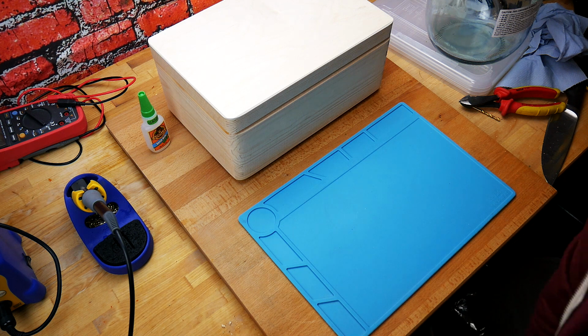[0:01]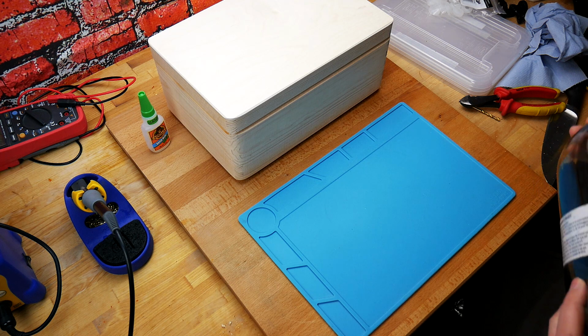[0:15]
Welcome back, guys. So today we're going to be doing a bit of a DIY project. We're going to be creating a stir plate. You can buy these online for about 70, 80 pounds, but very easy to make yourself.
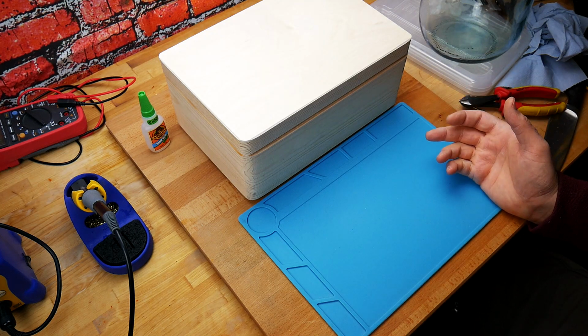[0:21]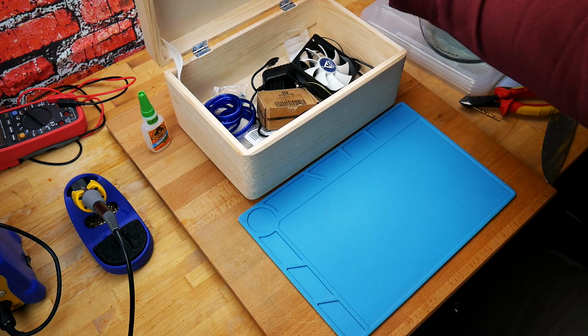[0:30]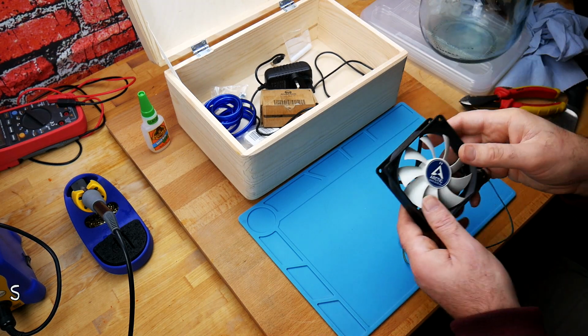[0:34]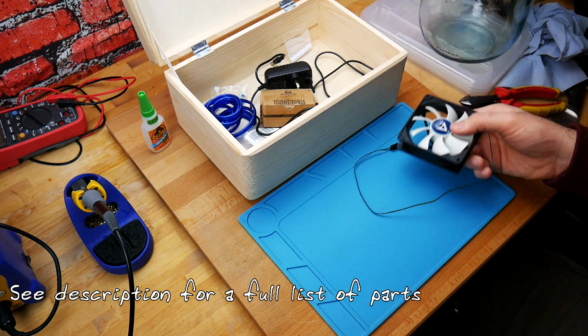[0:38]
So what do you need to make a stir plate? So I've got a box. You don't have to go fancy with a box like this, but I got this quite cheap on Amazon. Here are a couple things. First thing, a fan. I'm sure that you have one lying around. If not, they're very cheap to get online, a couple pounds.
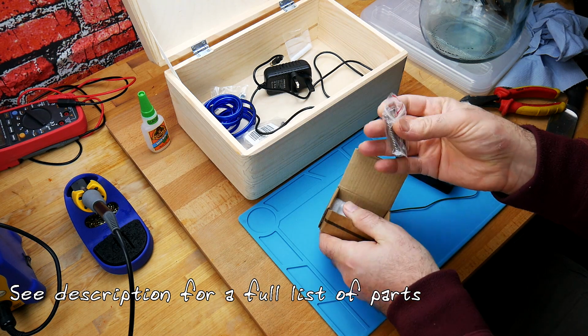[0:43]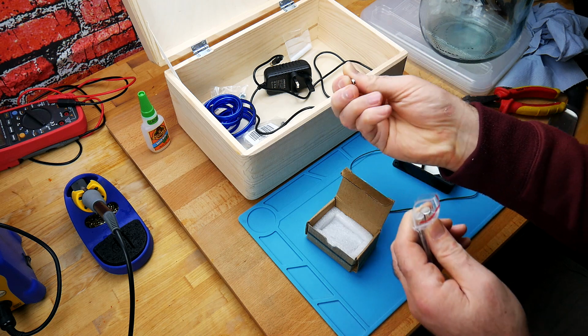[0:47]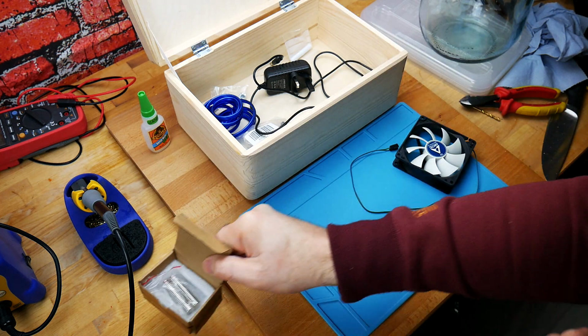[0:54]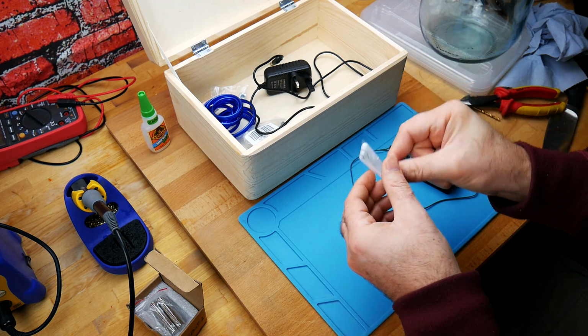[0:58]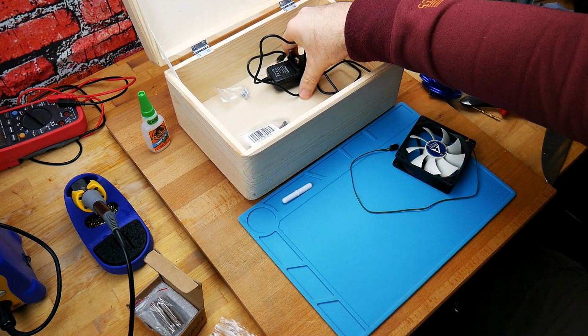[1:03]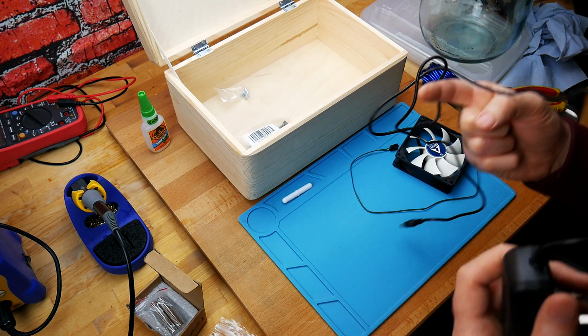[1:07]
You're going to need some magnets. These are just little button magnets, rare earth magnets, neodymium magnets. They're very strong. So we need a couple of those. You're going to need a stir bar. Again, online you can get these quite cheap. You're going to need some wire to do some wiring inside here. We need a 12 volt wall wart, so something like this. This provides 12 volts at 1 amp. Should be more than enough to drive this fan.
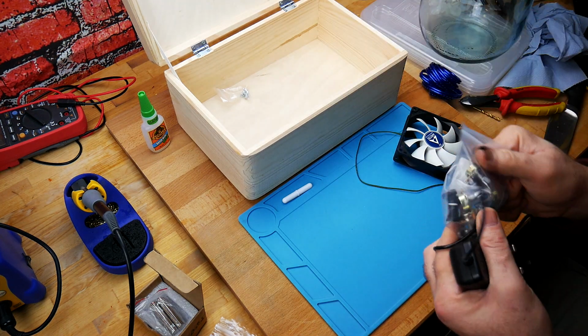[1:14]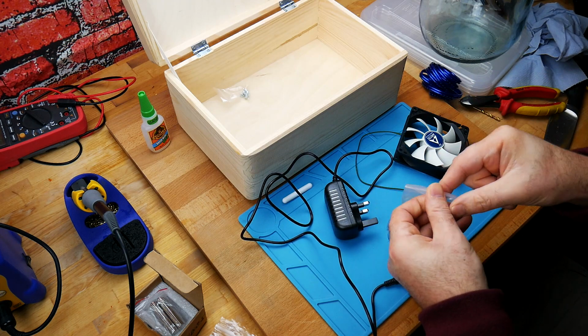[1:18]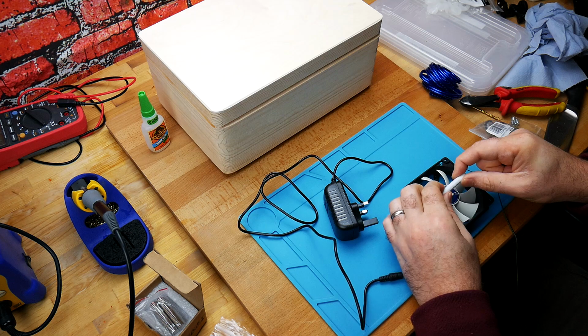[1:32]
And you can get yourself some of these. So this here is just to be able to change the speed of the fan. So you connect the wires going in, and this here you turn to turn it up and down. Pretty straightforward. The stir bar is essentially going to be sitting just above that inside the bottle, and the magnets are going to sit here and spin it.
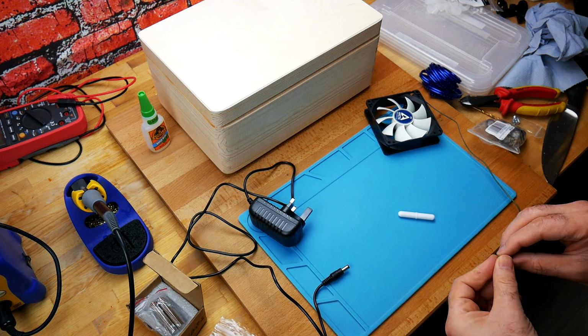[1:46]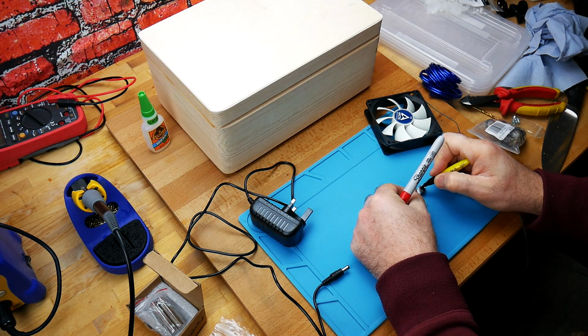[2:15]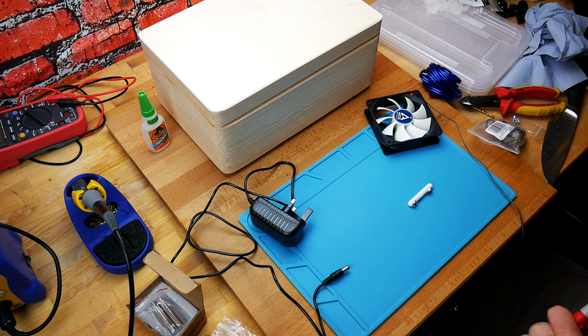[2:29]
So this is already magnetized, and the first thing you need to do before you do anything else here is make sure you know which side is north and south on these magnets. So if we do this, we can see that it sticks. It sticks that direction. If I move this across, you'll see that it wants to flip over. So make sure that we've got them the right way up. There we go. And just mark them. Color it in with a bit of black and the other one with red, so I know when I glue it on that I'm not putting them both the same way up. So there we go. You can see, marked them there.
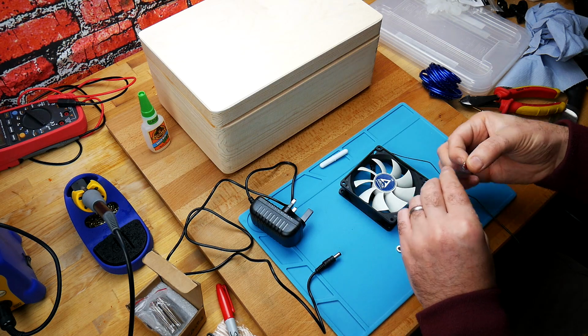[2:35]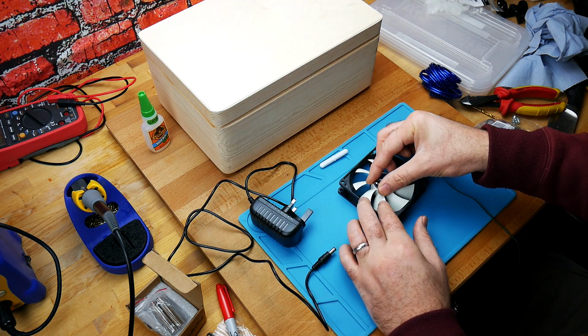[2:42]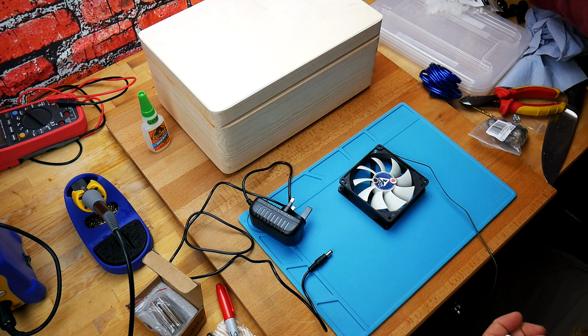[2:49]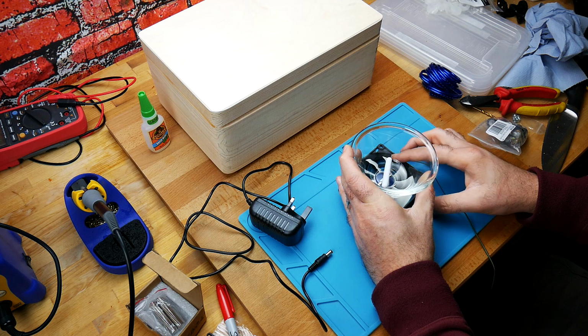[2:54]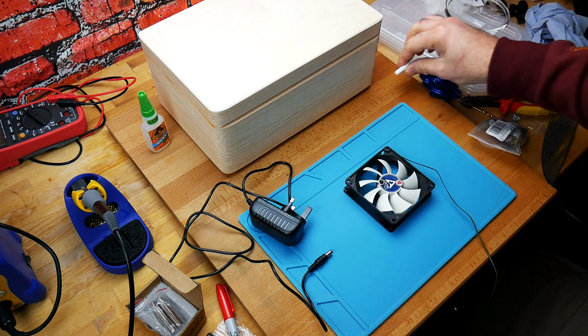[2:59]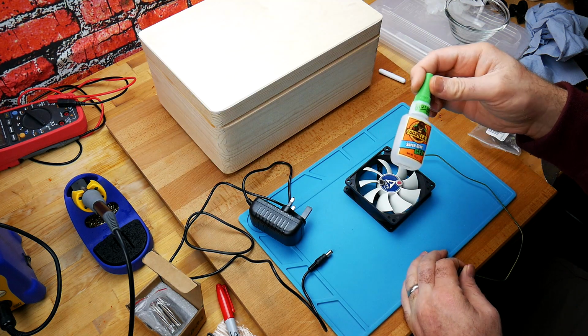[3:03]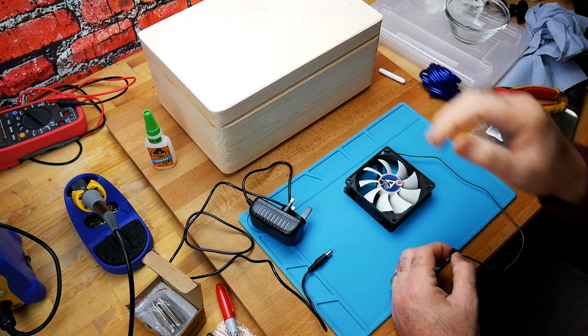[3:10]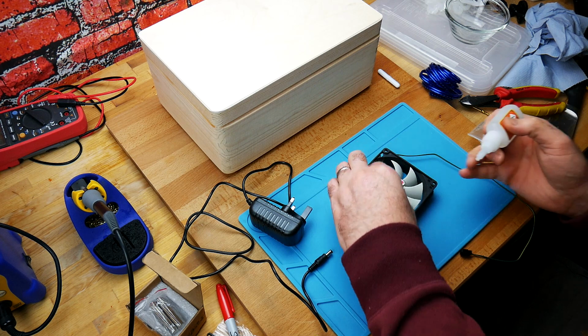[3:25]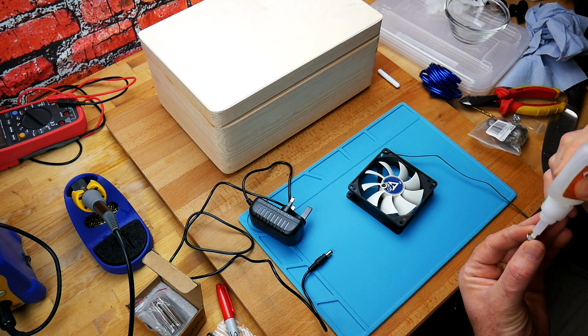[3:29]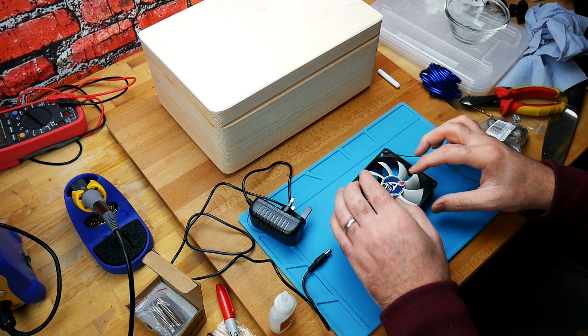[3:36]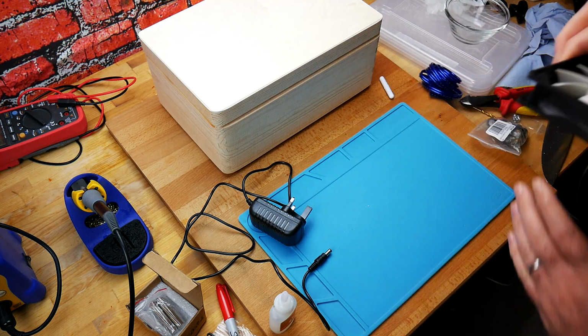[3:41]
My intention, I think, is to glue this onto there and glue that one onto there. So that's the intention, and basically that should, if we have a look over there, you can see that kind of works. So let's see, we're gonna glue that down. I'm gonna use some Gorilla Glue or super glue to glue those on there. And then we start doing the electrics and get the box set up. I'm going to try and get this evenly spaced because you don't want this wobbling when that fan is spinning. Okay, so we let that dry and let's start preparing the box.
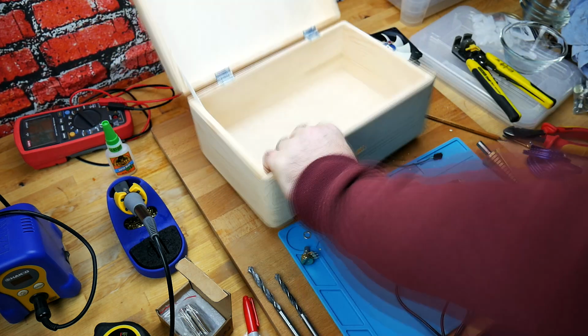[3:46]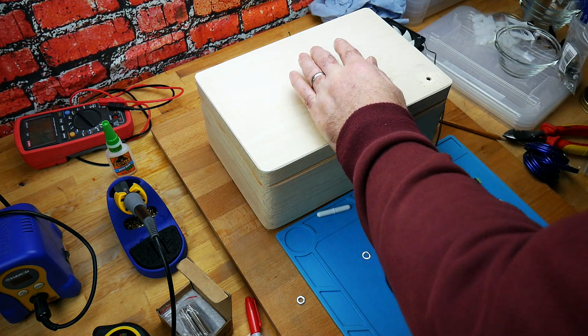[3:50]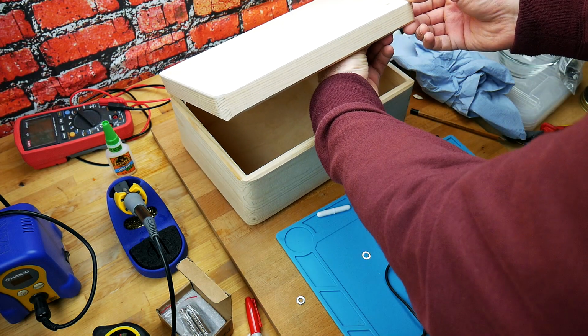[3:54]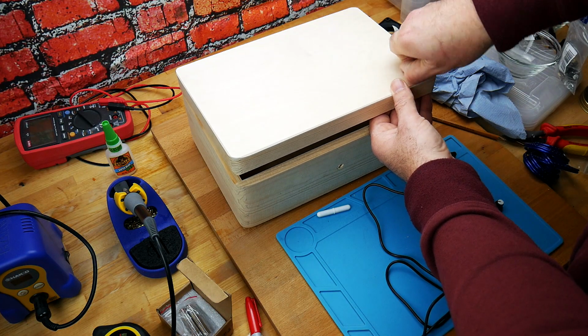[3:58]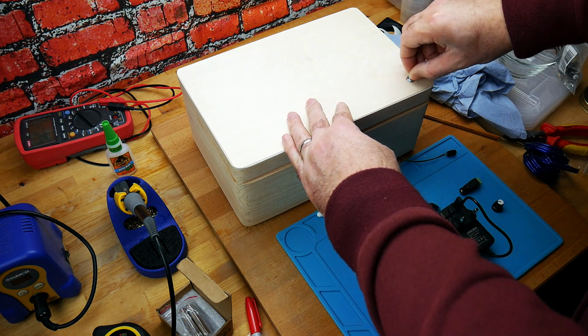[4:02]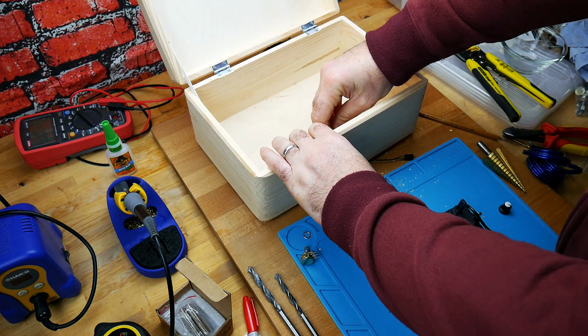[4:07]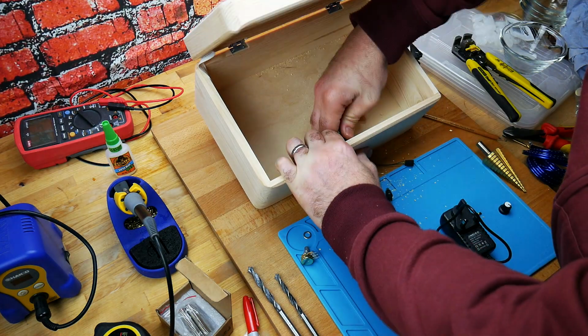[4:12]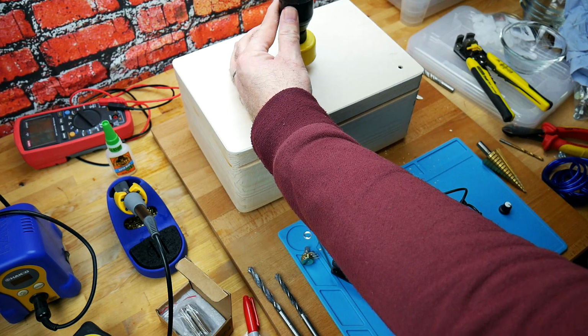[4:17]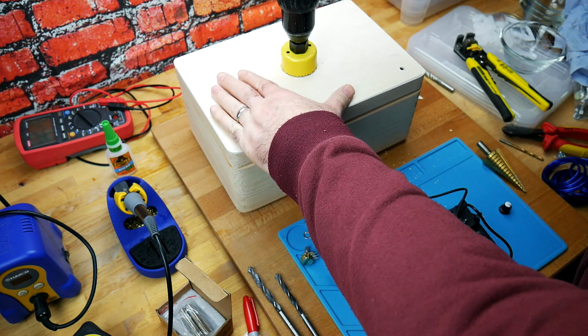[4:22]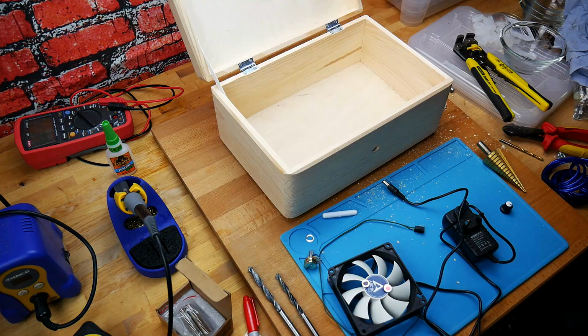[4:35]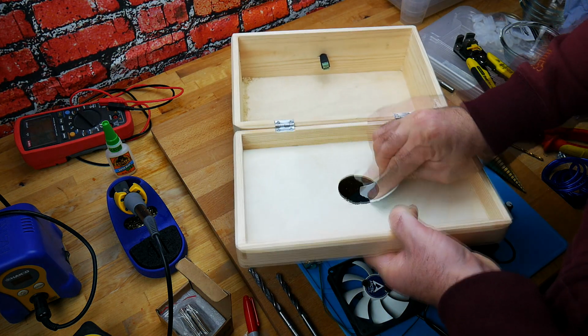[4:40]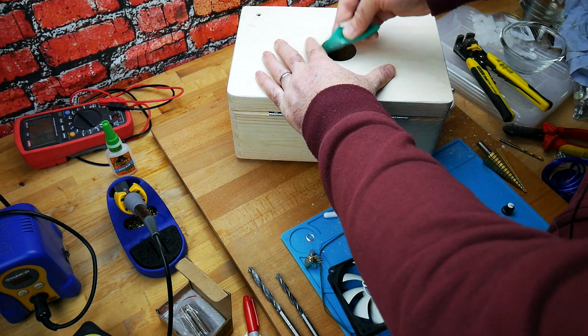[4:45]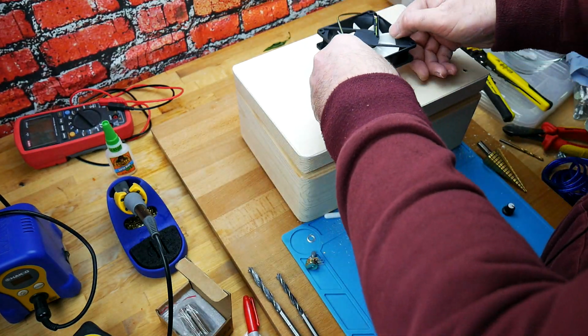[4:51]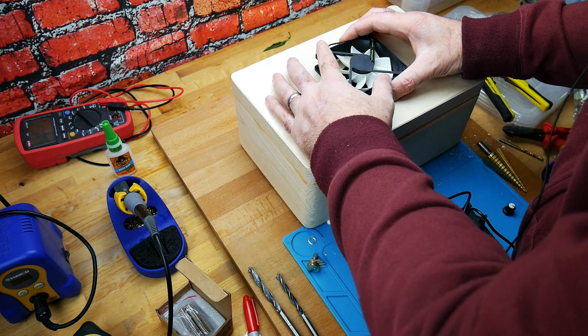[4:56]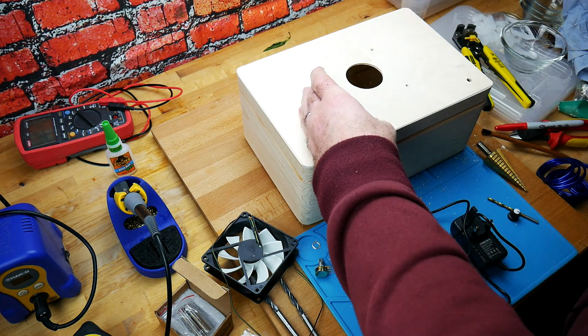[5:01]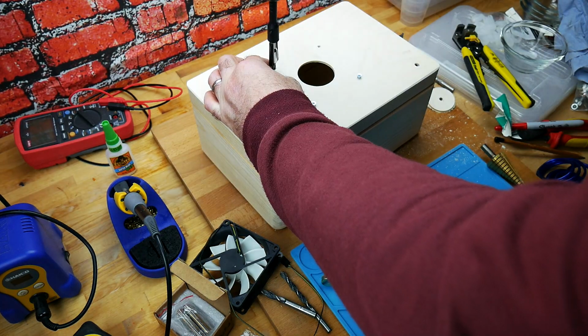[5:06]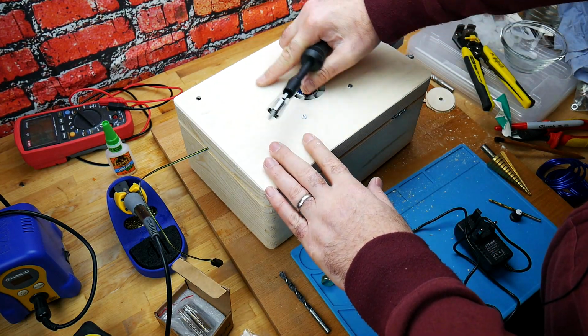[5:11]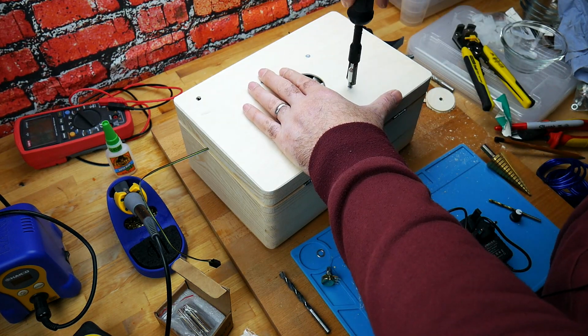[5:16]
Pretty much what it'll look like. We'll have that on top. Okay, little tip here, when you are using these type of things on thin wood like this, run it backwards. A much cleaner hole. Sandpaper, just smooth out those edges. The next thing here is need to center this and put some holes in for the screws. What I do want to try and do is get that as flush as you can, so that anything that's sitting on top isn't going to be sitting on top of the screws.
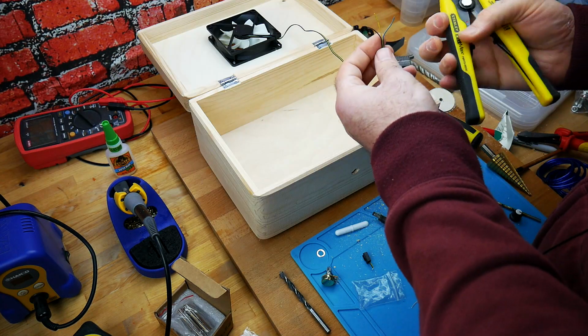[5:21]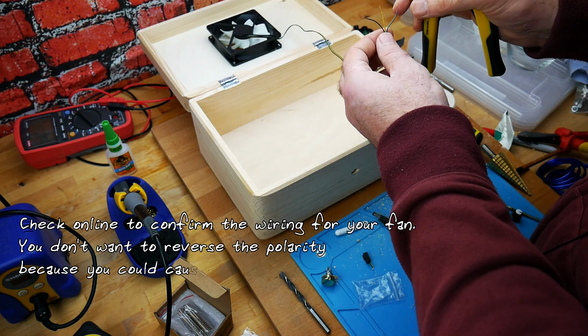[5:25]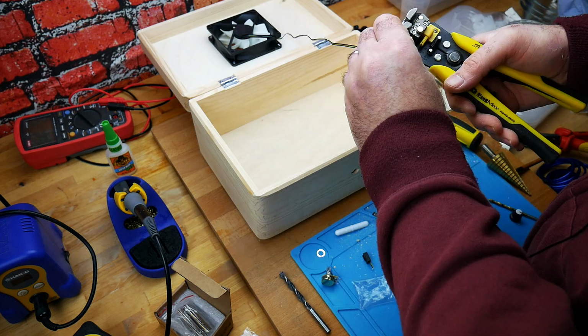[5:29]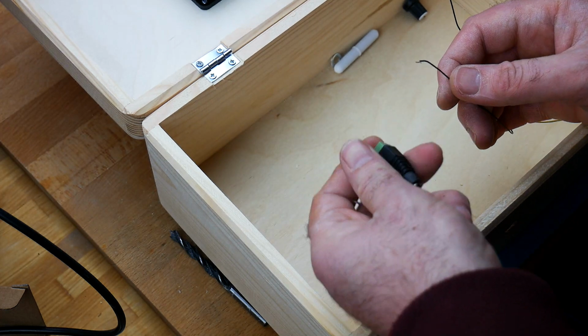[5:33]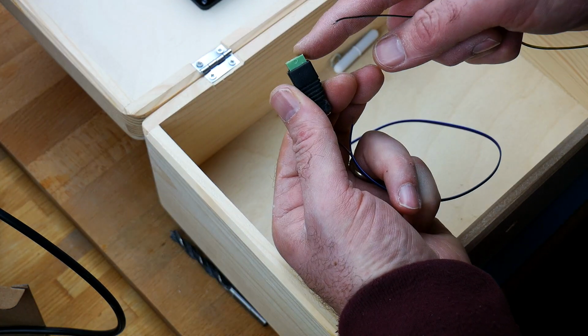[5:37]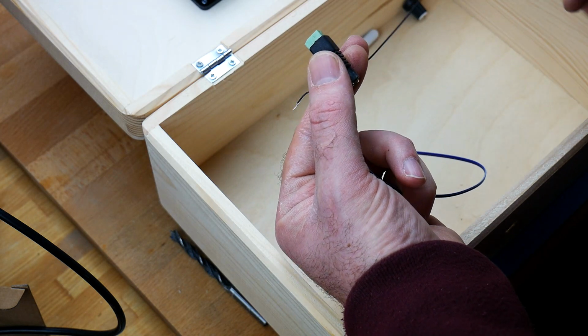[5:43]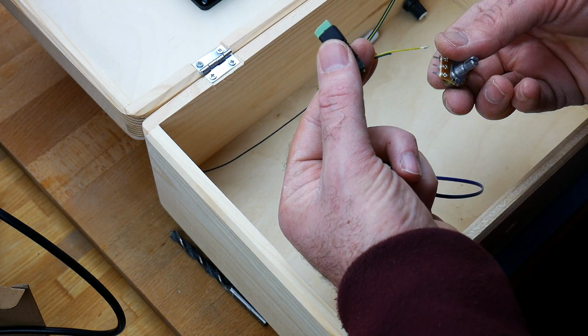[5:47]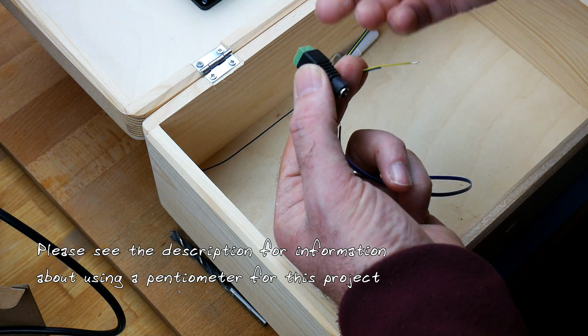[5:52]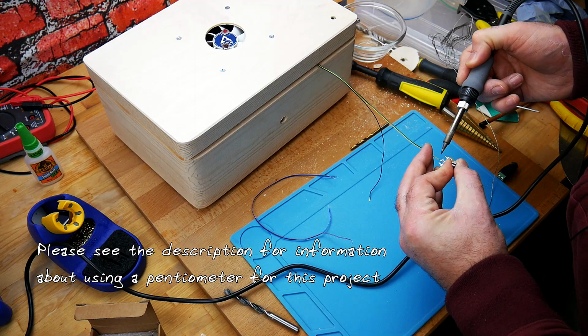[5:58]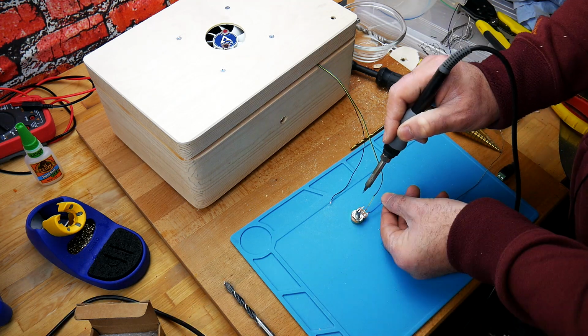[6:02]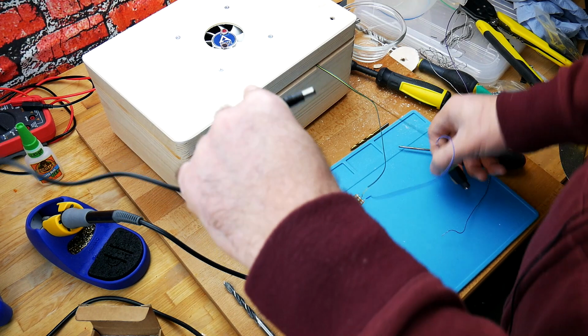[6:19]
I suppose I could have countersunk this. So with this, I believe the green and the yellow and the black are what we need. So we don't need the green. So basically the negative from the power source, which is going to come in here, will go directly through this into the fan. And the positive, one end is going to go into the potentiometer, and the positive from the power in is going to go to the other pin on the potentiometer. And that'll allow us to control the current. So we can test this now to make sure it works before we put it all back together.
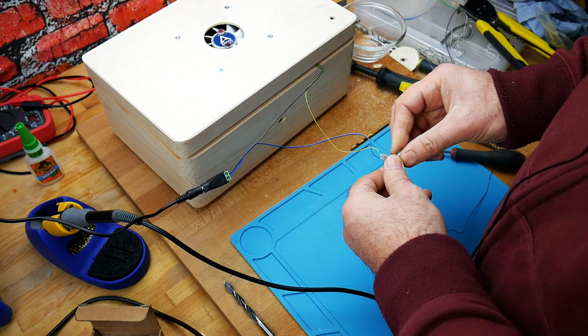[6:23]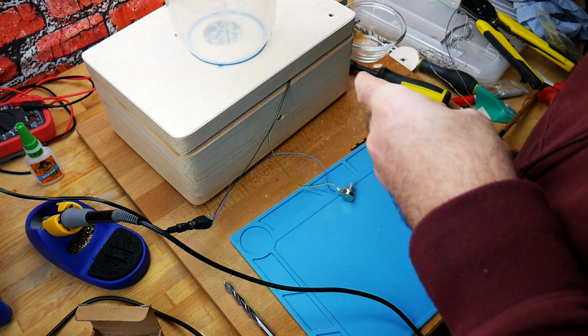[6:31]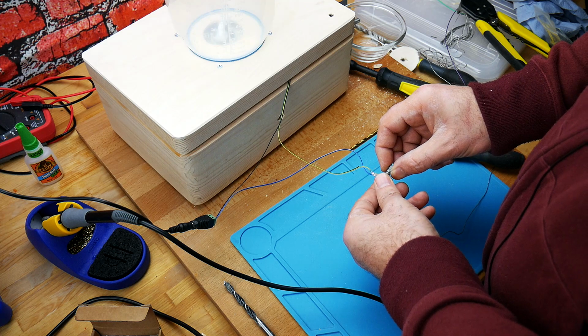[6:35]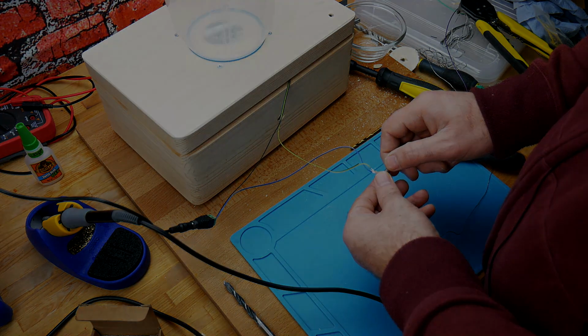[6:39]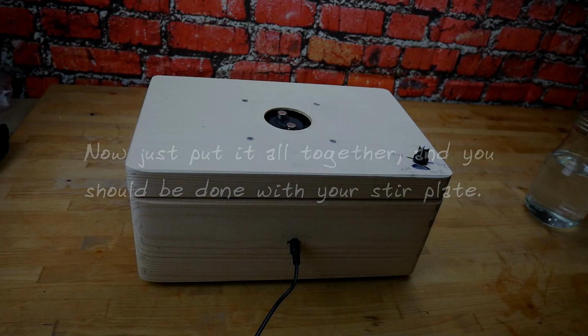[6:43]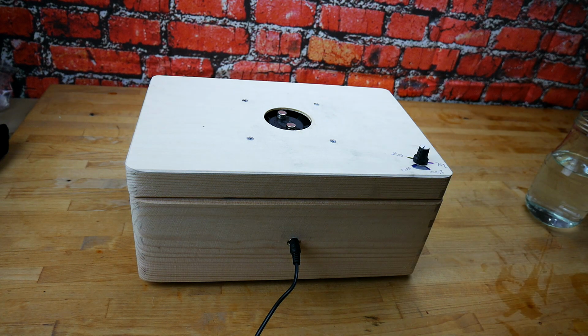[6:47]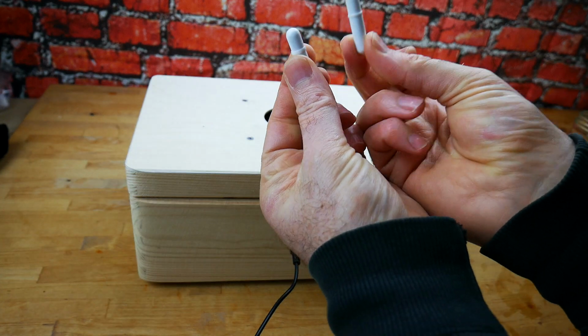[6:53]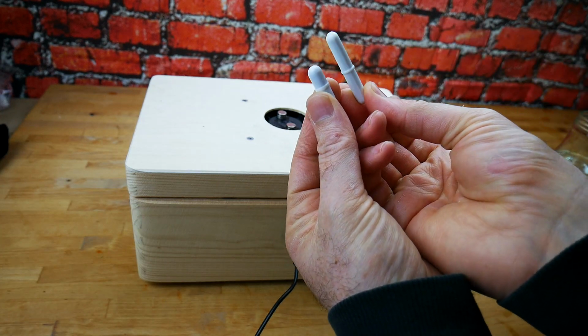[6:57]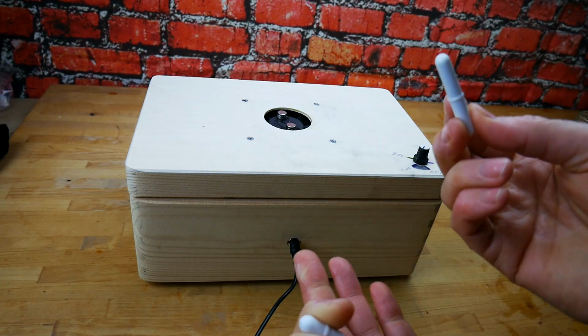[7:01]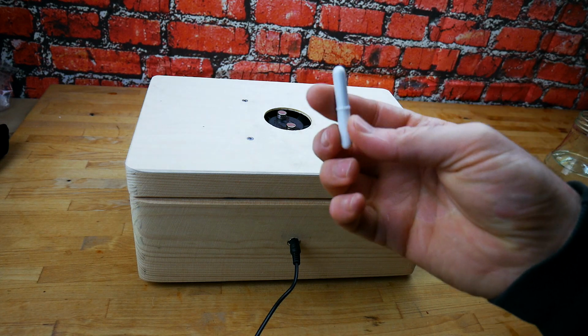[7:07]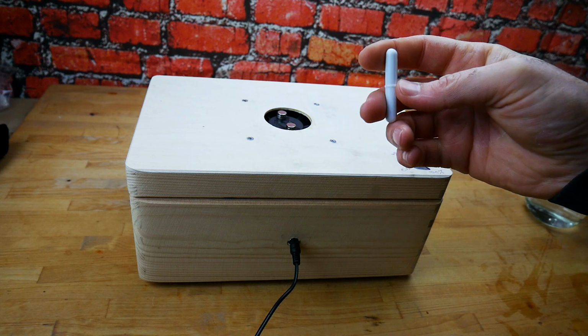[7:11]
So it's been a little while since I made this. The biggest problem I had was the fact that the stir bar kept jumping off, but I fixed that because you can see here, that is the stir bar I originally bought, and this is the one I actually used. It's much smaller. I mistakenly thought the bigger the stir bar, the better it is, because it'll stir better and it'll stir more, but that's just not the case. The problem with the bigger stir bar is the inertia of this is going to be way too high. And it spins off and it will fly off.
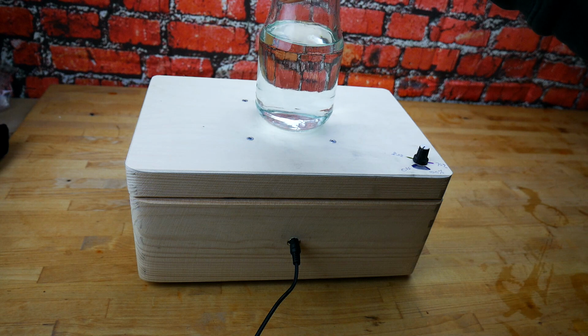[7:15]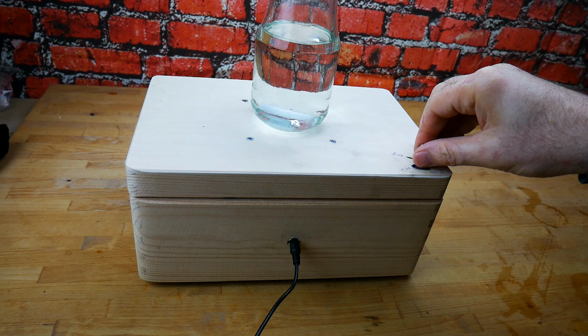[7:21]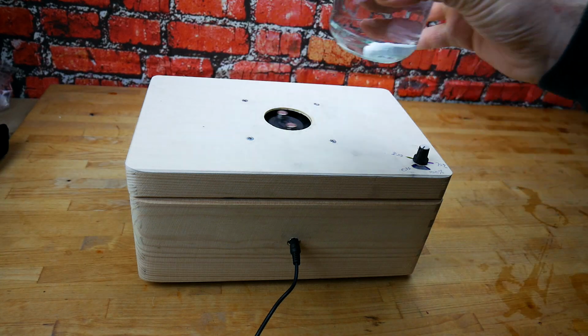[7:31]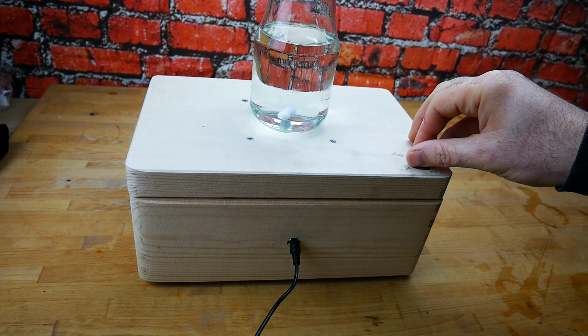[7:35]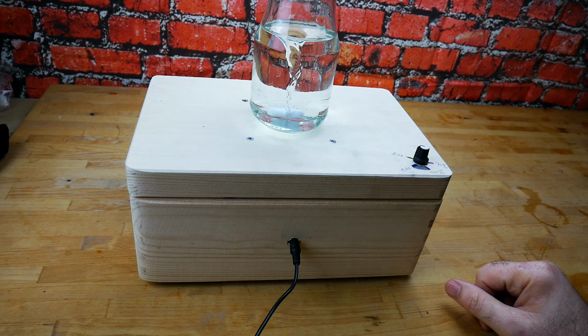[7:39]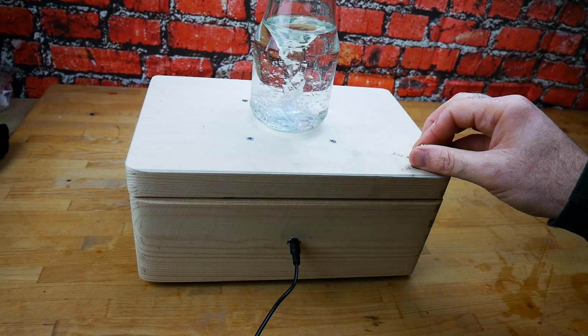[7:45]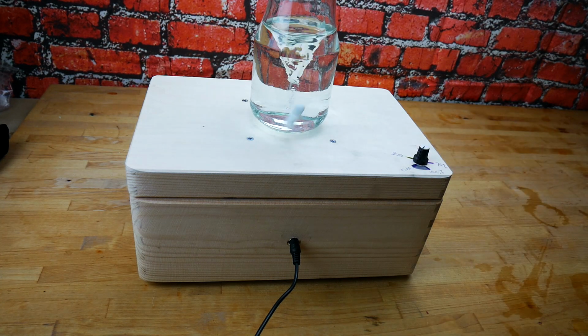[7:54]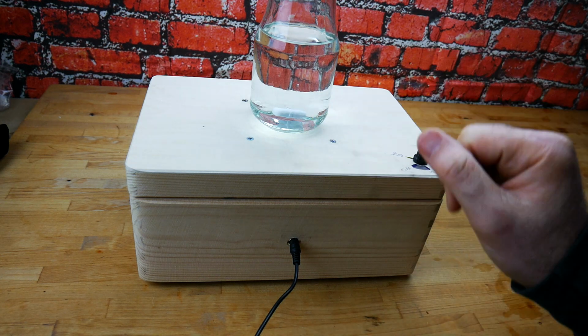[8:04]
So if we have a look, I'll show you an example. I use the bigger stir bar. We put that in there. We start off slow, no problem at all. As soon as you go any faster, and you see what happens, it just flies off. So let's do the same thing with the smaller stir bar. And you can see we can turn it up quite high. And it works perfectly. So I've tested this with my 1 gallon demijohn and it works perfectly in there as well. So like I said, if you are having problems trying to get that stir bar to stay on, just get a smaller stir bar.
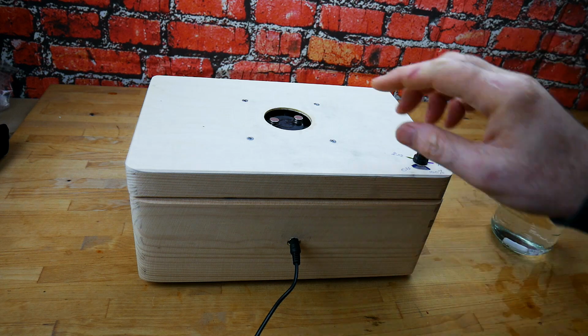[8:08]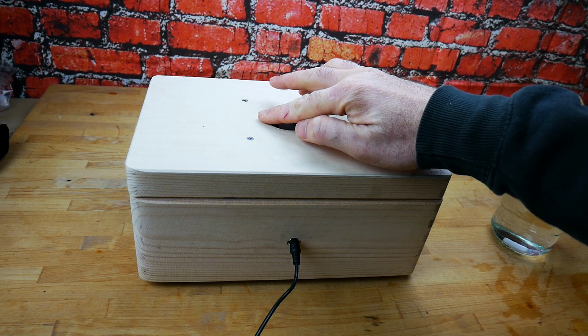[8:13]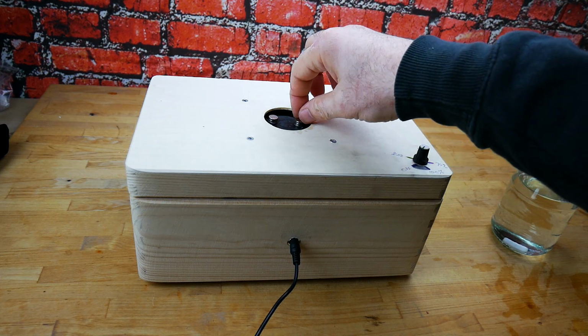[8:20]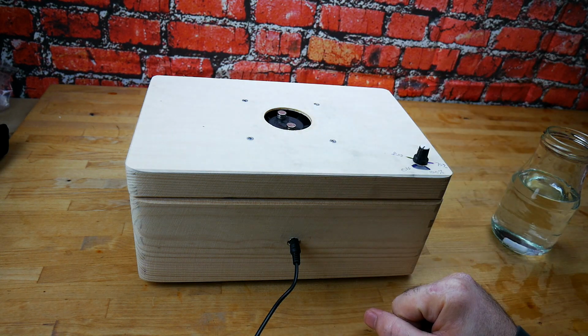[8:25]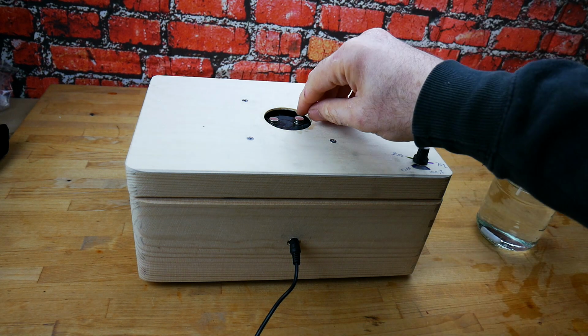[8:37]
The second thing I did is I added a couple more magnets to this. So basically, these magnets are just on the edge. So anything sitting on top here, these magnets are coming up just to the edge. But you can see adding a couple more of these button magnets actually increases the magnetism here, and it allows the attraction on here to be a lot stronger. So it definitely made quite a big difference. So if you're having problems again with the stir bar spinning, staying on, then try that as well. Try adding a couple more buttons to this. Glue them on, because if you don't, these things will just fly off.